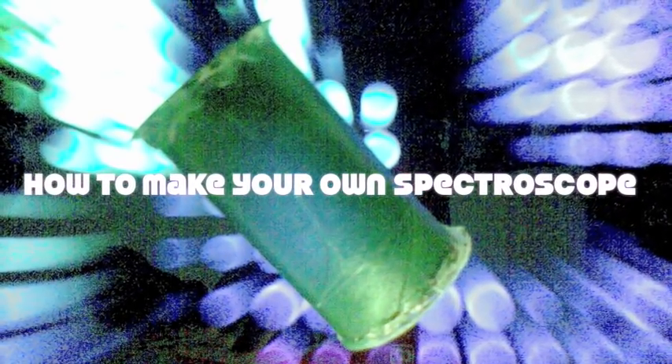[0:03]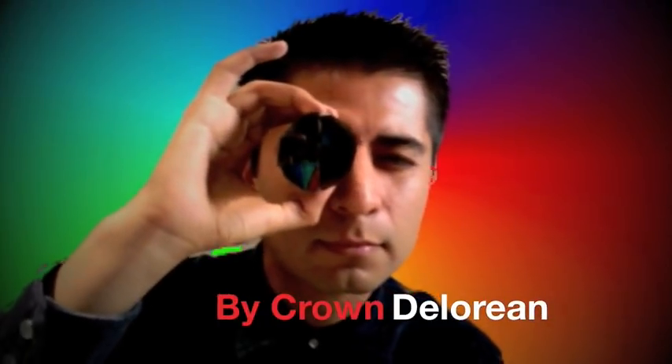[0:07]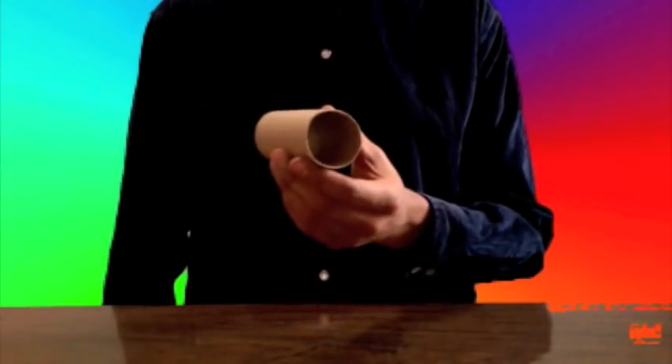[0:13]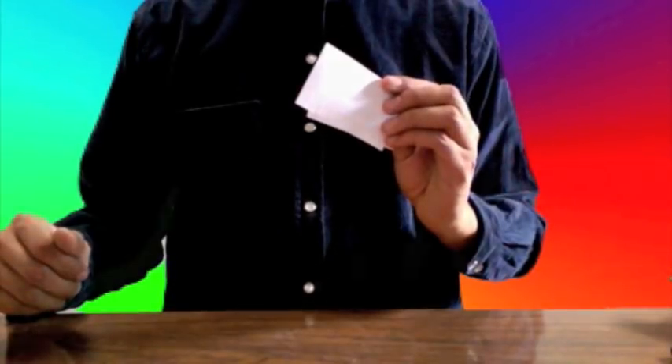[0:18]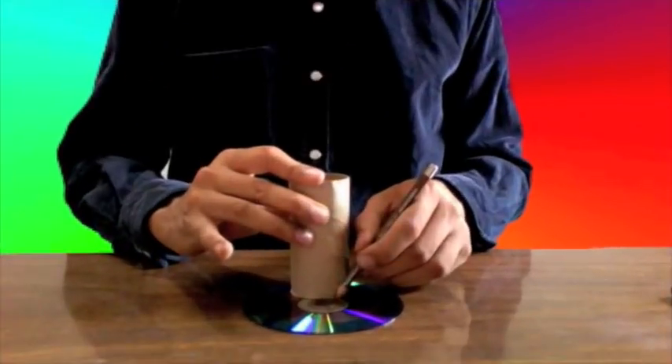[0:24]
In this video, I'm gonna show you how to make your own spectroscope entirely from junk you can find around the house. This is a great science project for kids. Here's what you need: a cardboard tube, a blank or recycled CD, two index cards, hot glue, pen or pencil, a utility knife or scissors, paint and tape. Here's how to do it.
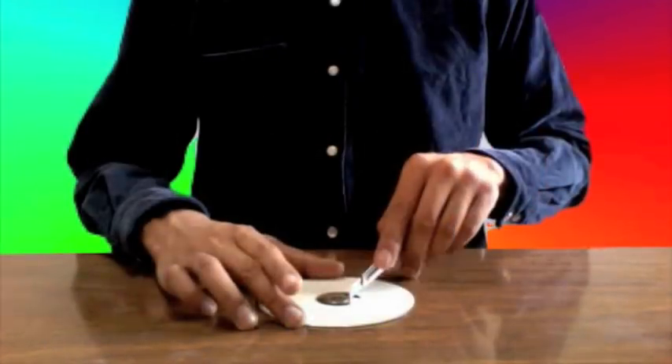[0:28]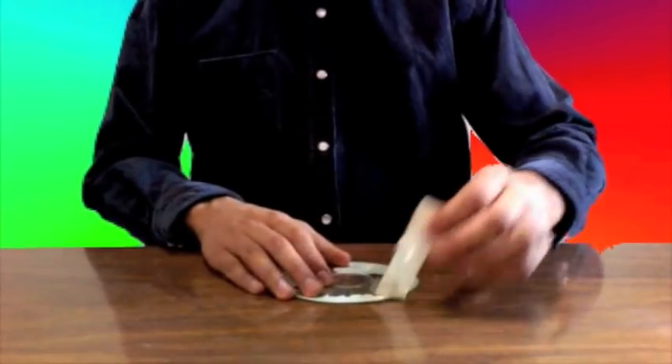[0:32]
Mark a circle on the CD using the tube as a template. Make a little scratch on the disc. This will make it easier to remove the reflective layer from the CD using tape, and cut the circle.
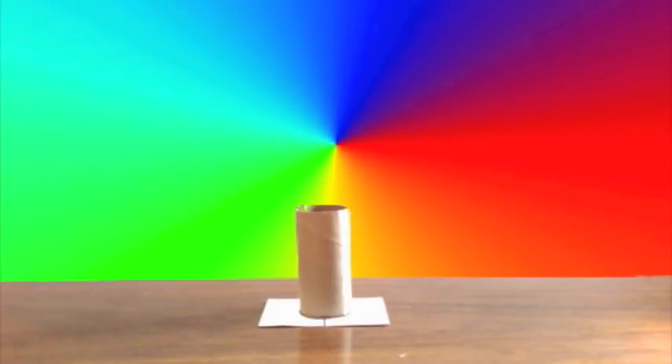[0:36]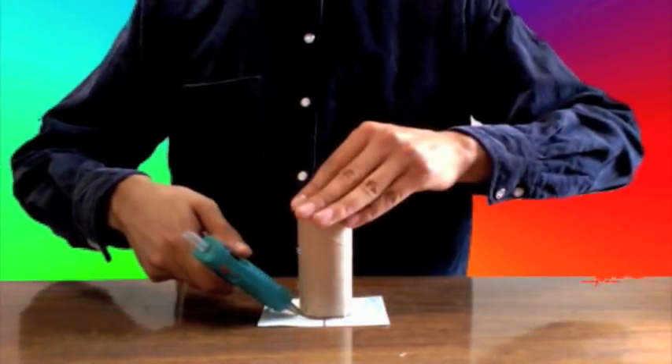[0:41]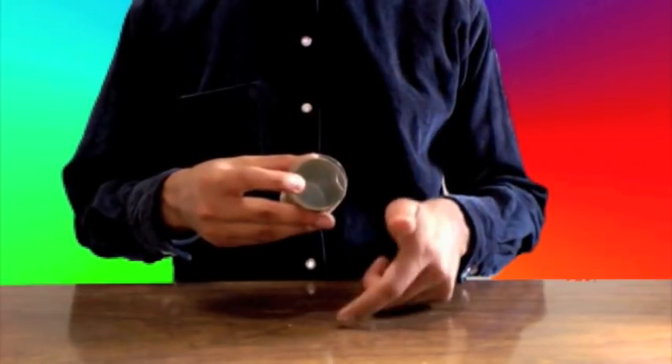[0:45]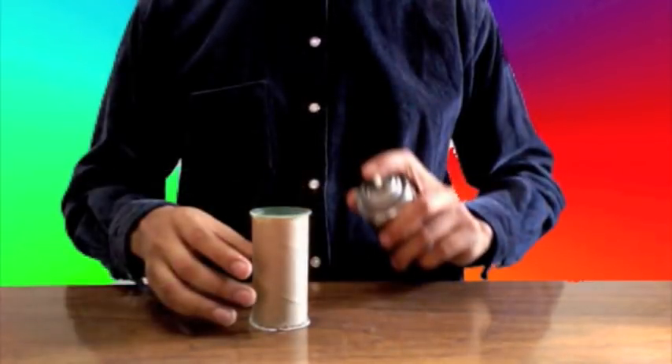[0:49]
Place two index cards over one side of the tube, creating a vertical slit, and use hot glue to stick it in place. Paste the circle at the other side of the tube, and make sure the lines of the CD are parallel to the slit between the cards. Cut out the rest of the index cards. Paint as you like, and it's ready.
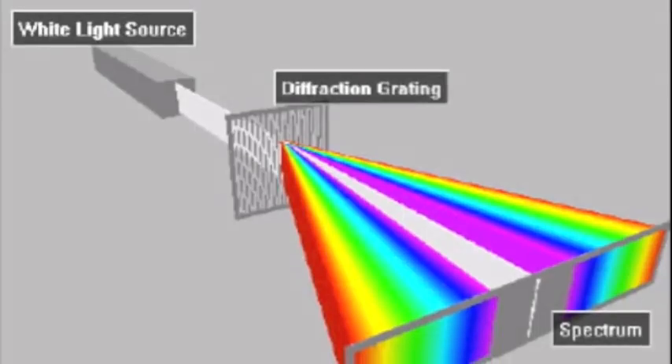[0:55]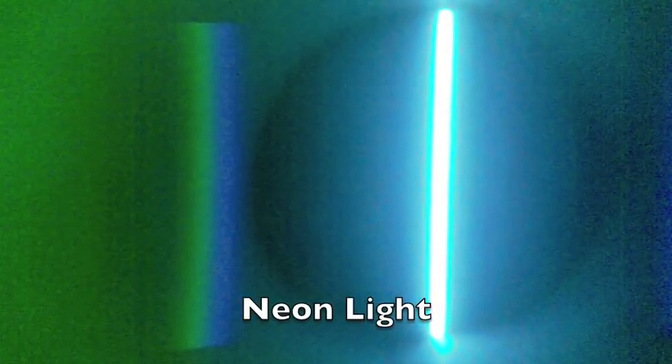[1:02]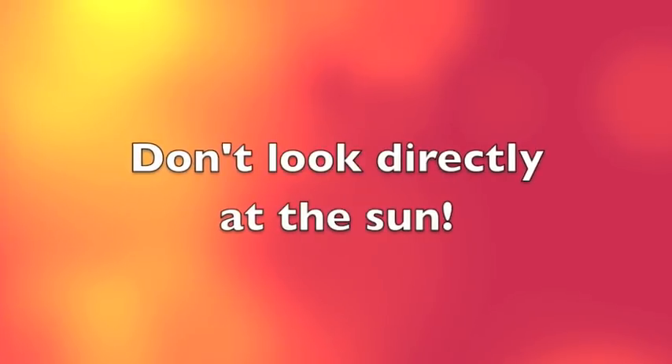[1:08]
Look through the CD plastic and you'll be amazed how it is acting as a great diffraction grating, breaking light up into its constituent spectral colors. Now you can see the light spectrum from almost any source of light. But remember, different light sources produce different spectra. Don't look directly at the sun. Have fun!